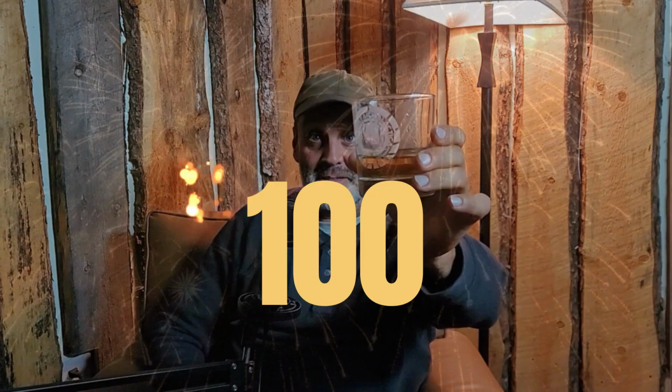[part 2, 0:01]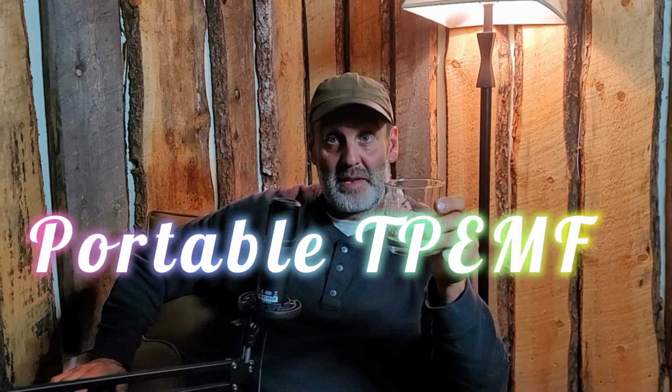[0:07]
Second milestone for today is that we are building a PEMF today. I'm going to show you how we did that. So you're going to be able to use it on your head. We're going to be able to follow up from last week's video, which is incredible. So you're going to be able to own one of those things for a fraction of the price that they would cost. You'll be able to do it at home, be able to help your friends and stuff like that.
And third milestone of today, I am one step closer to building the ultimate PEMF. And what is that, you may ask? Well, you're going to have to stay tuned to find out. But today, we're building a PEMF, just like we talked about last video, so we'll be able to apply that knowledge.
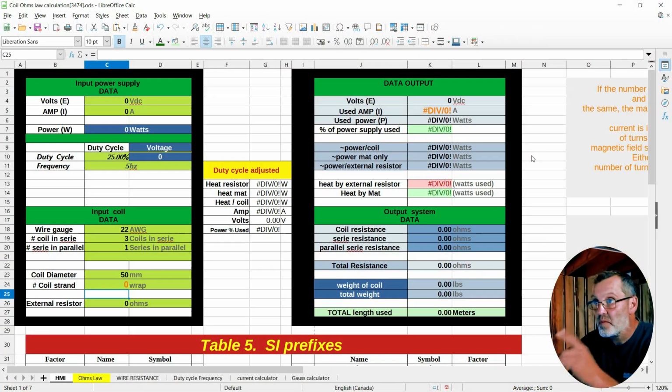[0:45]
We're going to start with the calculator. So the first thing we need to do is get through our calculator. We're going to be building something new, so we need to run some numbers. We're going to be using a 5-volt power pack. And they have a 1-amp output, and most of them have a 1-amp and a 2-amp output, but we'll start with that. Okay, we're going to be using 22-gauge wire. We're going to have three coils in the series, and then just one series.
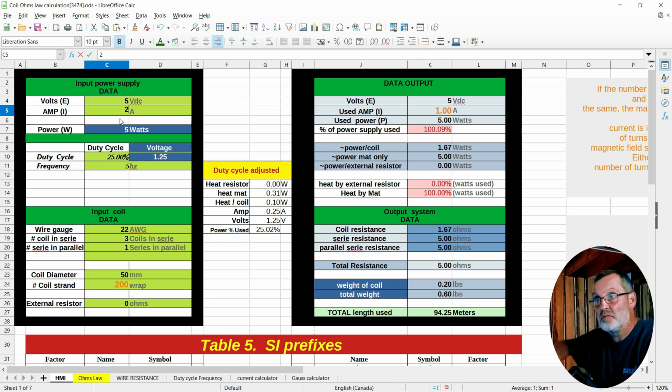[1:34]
They're 50 mil, which is perfect, because that's the coil diameter. That's what we're going to be using, 50 mil. And I believe I'd do 200 wraps. Yep, there you go. So it gives us 100%. Now with a battery, you don't have to worry about that, because that is fine. With a power supply, we would be burning it up. With a battery, it'll never give you more than what it can, and it's fine to give out 100% the way it is. If we had a 2-amp output, then that would be using 50% of what the battery can do. So, but for batteries, that's fine.
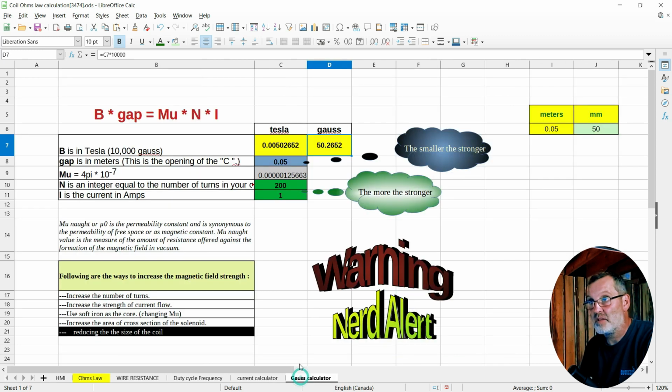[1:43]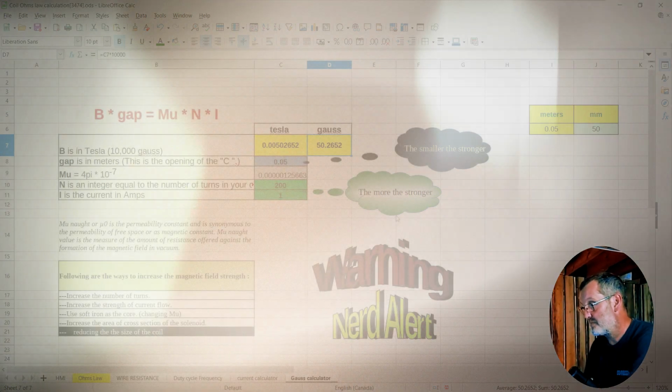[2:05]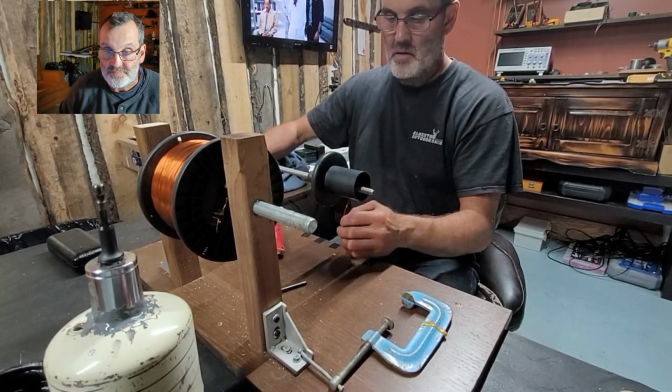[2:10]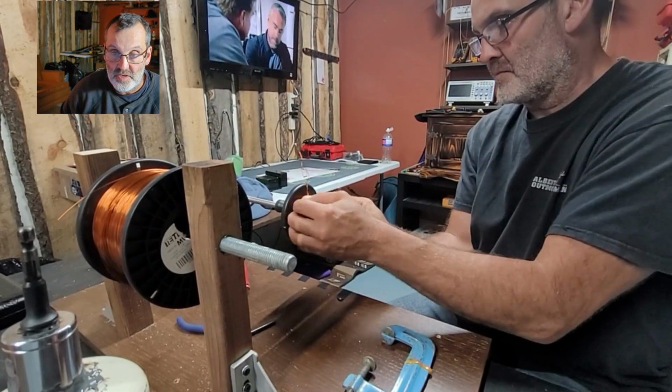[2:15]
Okay, let's make a coil. Same old 200 wraps for this one like we did in the calculator. I'm gonna get it out, tape the four corners, and then wrap it up.
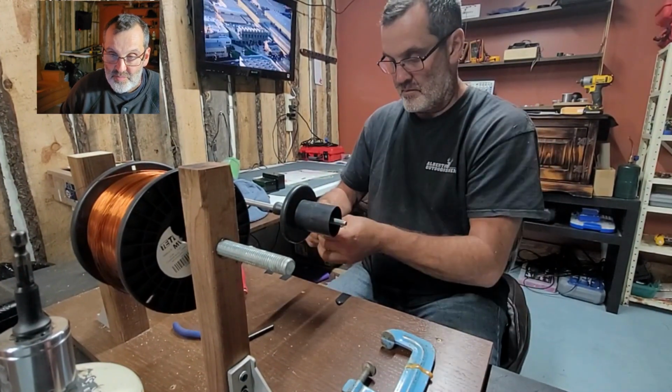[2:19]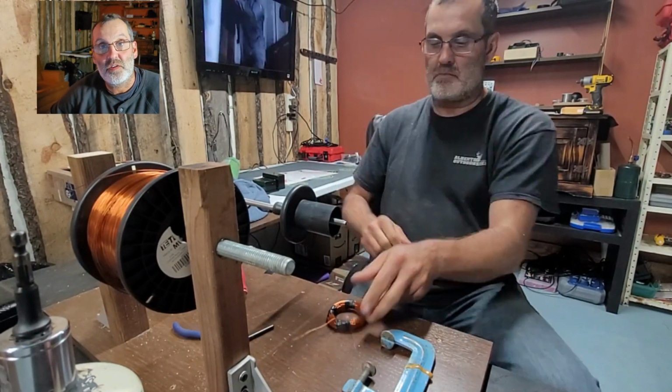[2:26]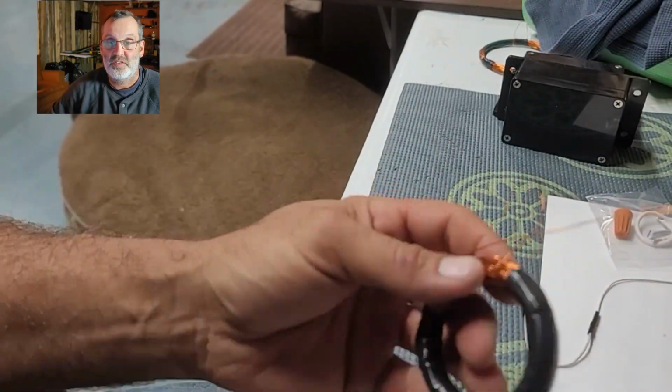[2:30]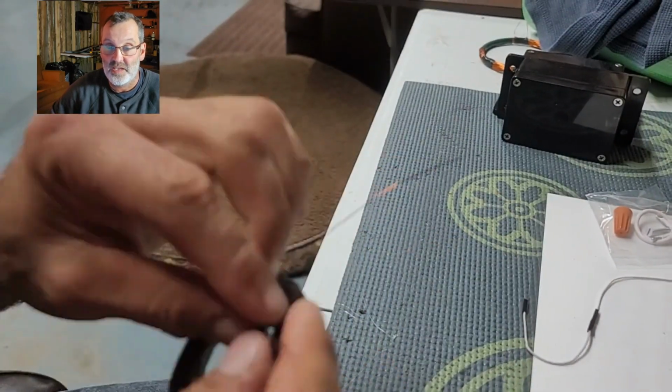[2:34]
I wanna take this time as you watch me doing this to take away from the theatrical of making YouTube videos and all that stuff. I didn't think we were going to get 100 subs. I didn't think I would get 100 people interested in watching this. So it's pretty amazing. I want to thank you guys for that.
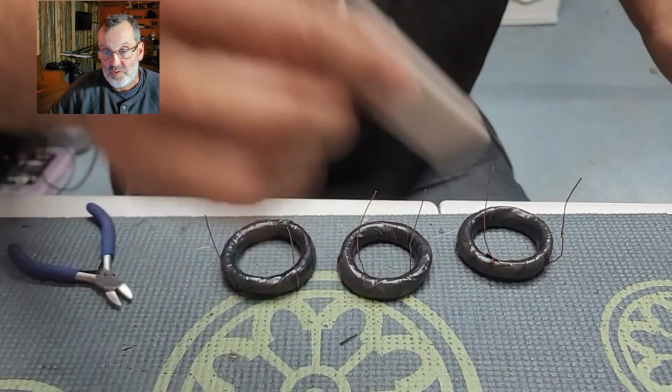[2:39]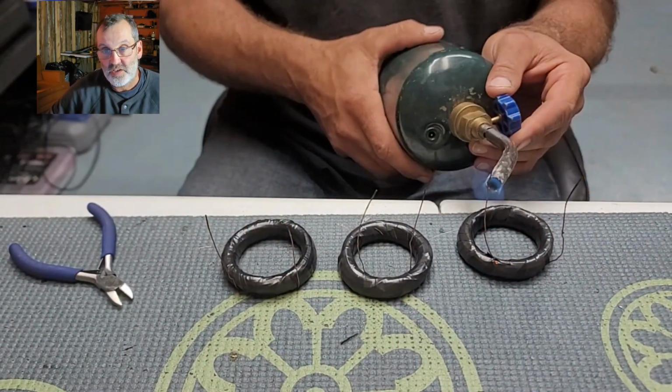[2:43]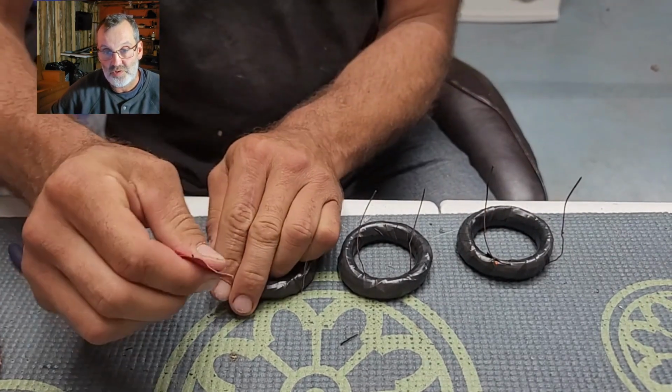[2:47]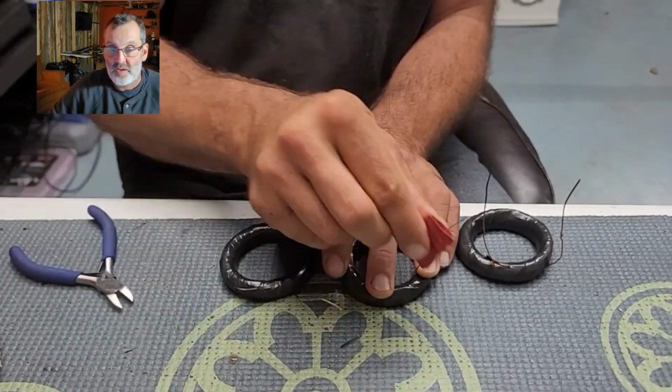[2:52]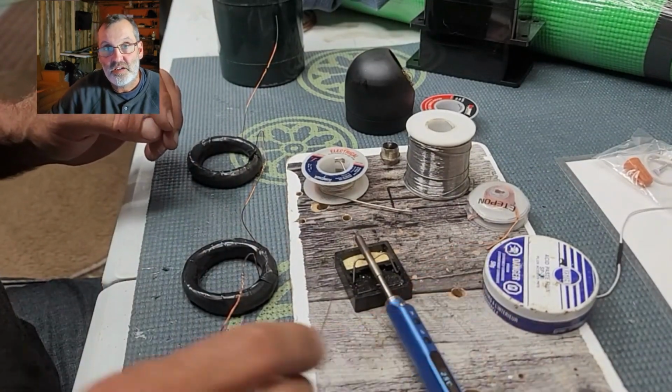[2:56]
Another thing I want to talk about today, before. See how I'm burning the end? You got to do that. You got to sand them down, burn them, clean them up. You got to expose the copper so you can make a clean connection. I want to briefly talk about why PEMF works. We're going to talk about that much later in the video series, but I'm going to touch on that today.
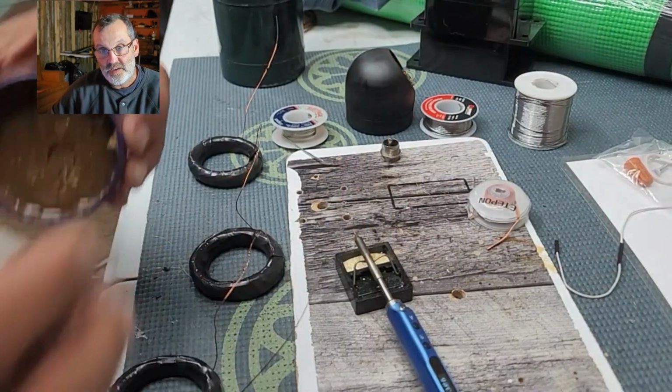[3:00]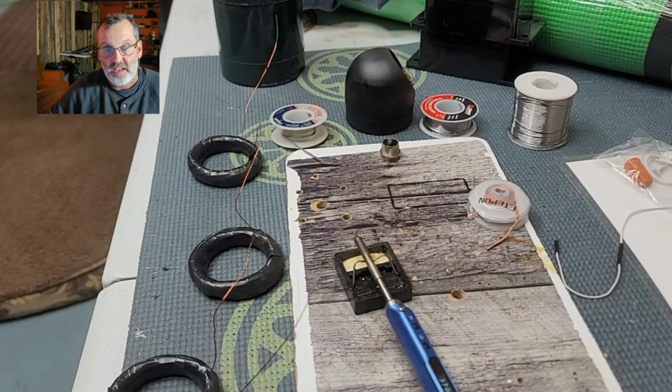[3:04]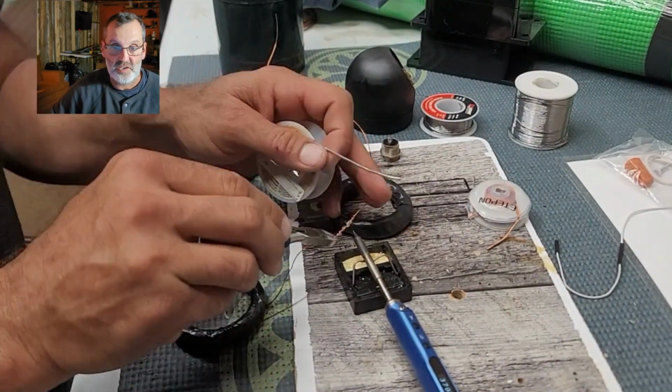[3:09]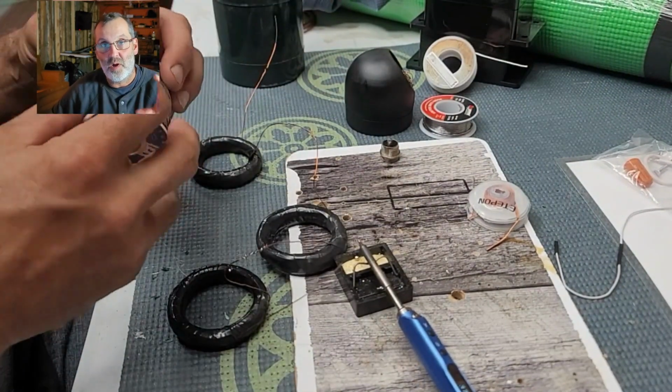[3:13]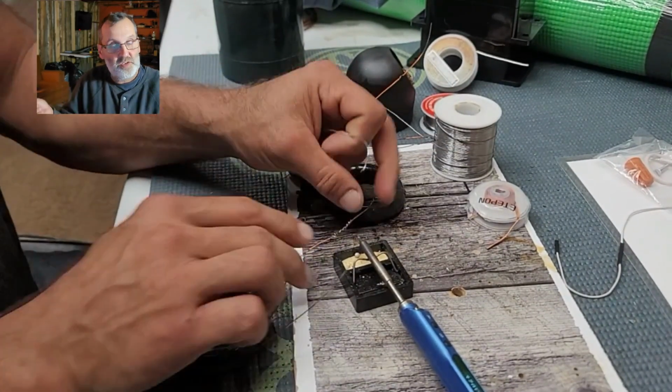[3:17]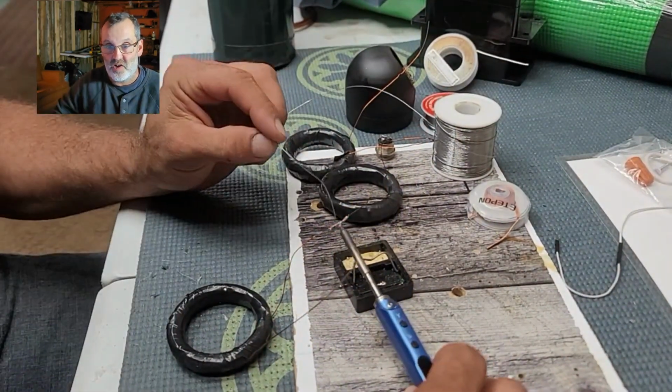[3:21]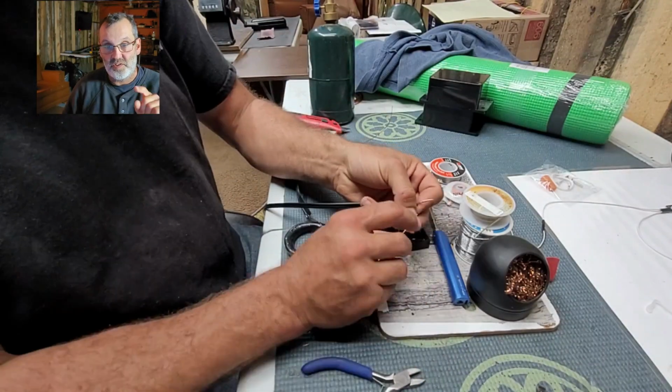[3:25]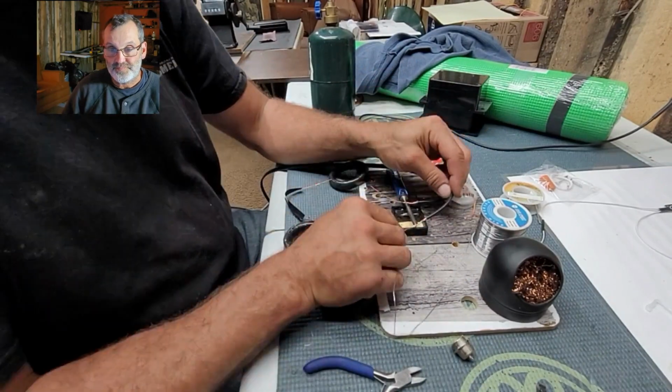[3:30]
You see the arrow right there? That wire in between the coils, that's a mistake. After it was all done, watching the video, I realized that I did that, so I took the whole thing apart, cut those wires off. You need a flexible wire between the coils. These magnet wires don't like to be folded, they break. They break all the time, it's just a matter of time and then they will break. So what you see right there is wrong. You need a flexible wire in between the coils, just the way I showed in the other video.
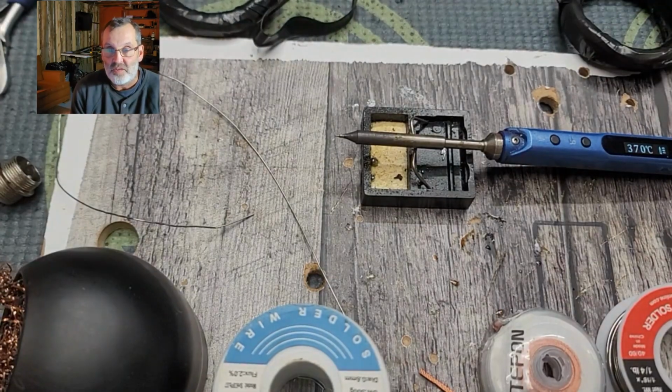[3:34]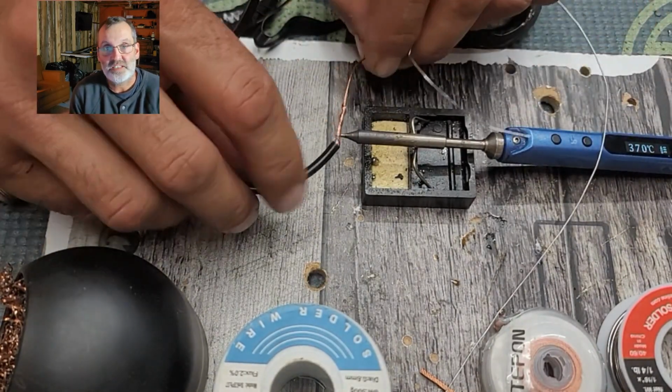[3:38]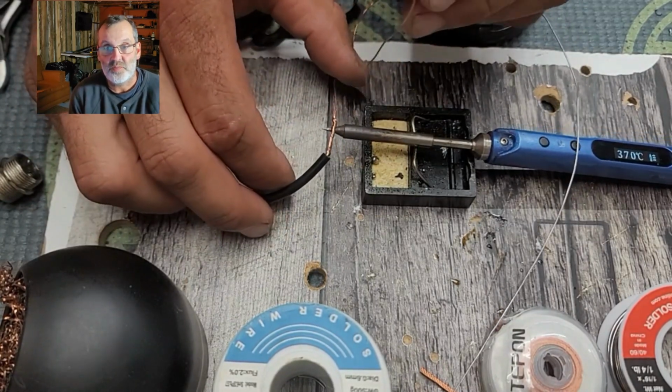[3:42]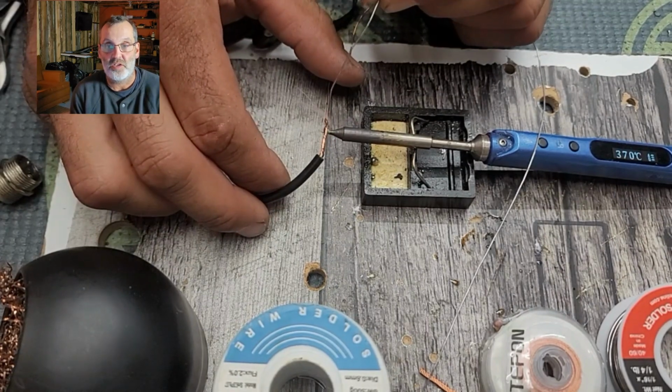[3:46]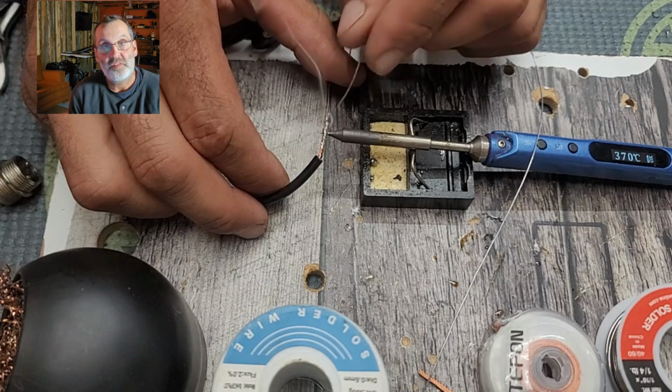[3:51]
So the pulsing EMF does not fix your body. That's not what fixes your body. What that does is it rebalances the immune system. The immune system is a really complicated system you have in your body. And that's what regulates the inflammation.
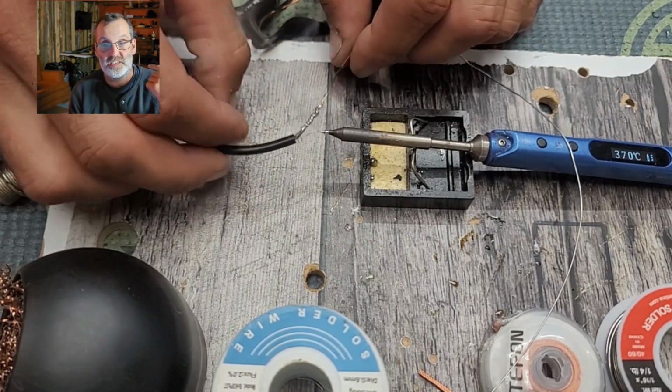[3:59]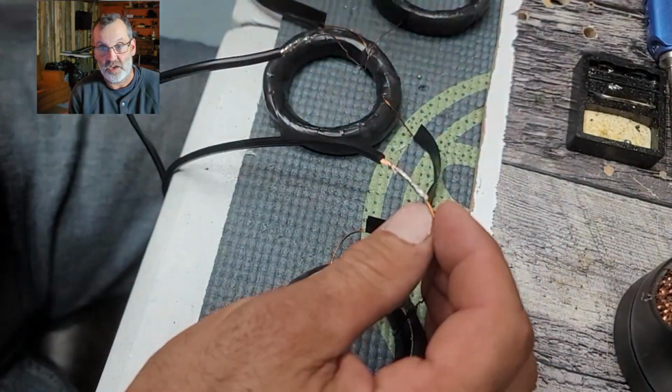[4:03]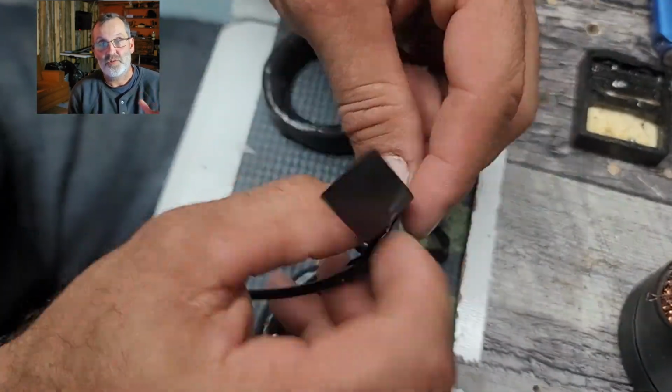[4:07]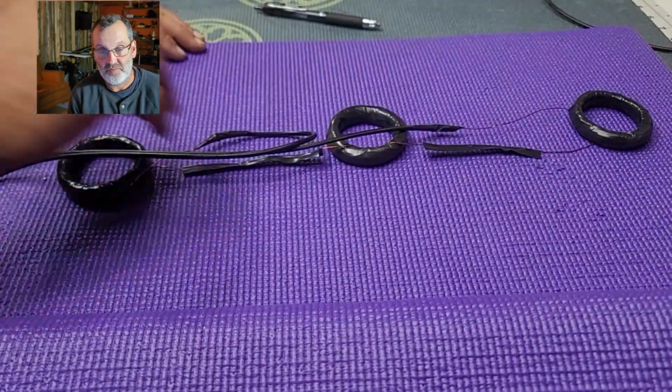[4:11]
Inflammation is 80 or 90% of the problem the human body has most of the time, from arthritis to autoimmune disease, name it, it's there. The immune system is in charge of all that stuff. So by rebalancing your immune system, you can get rid of chronic inflammation, which allows your body to heal itself.
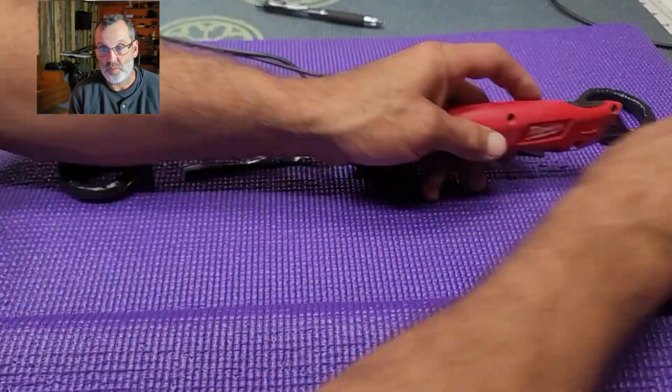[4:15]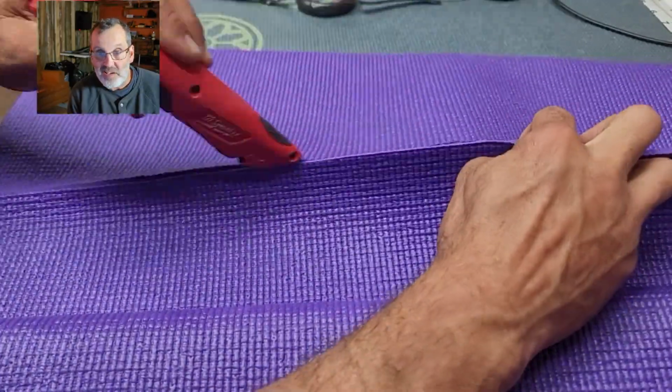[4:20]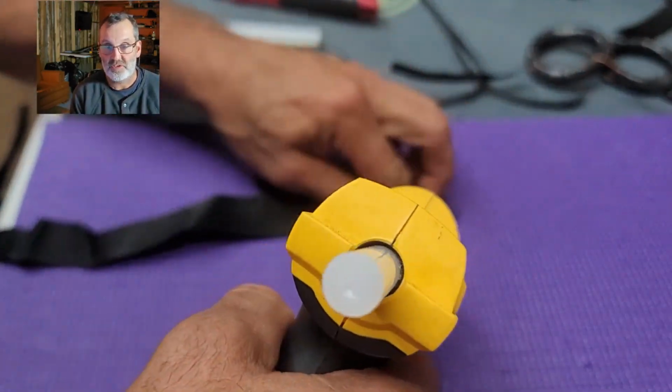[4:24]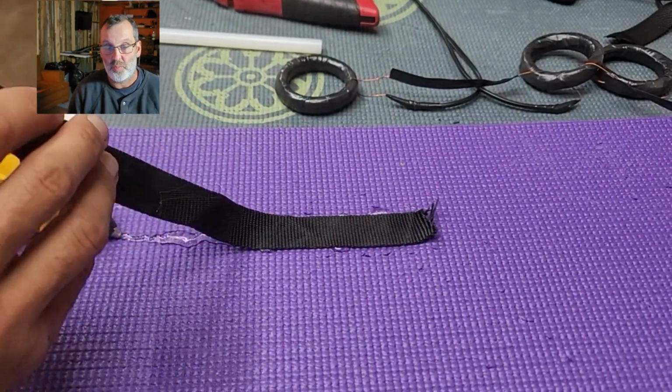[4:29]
Okay, here I'm just using a yoga mat, and I decided the width that I needed. And yes, I'm left-handed, and I just go ahead and cut it off, and then I use my glue gun and put the straps on. I have some straps and some clips, and I secure them in place so I can strap this portable PEMF around my waist, my shoulder, etc.
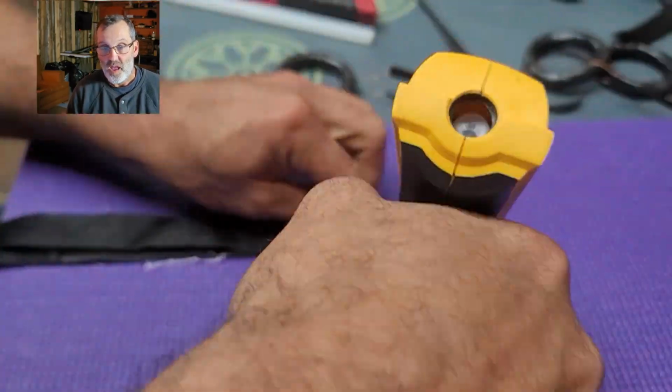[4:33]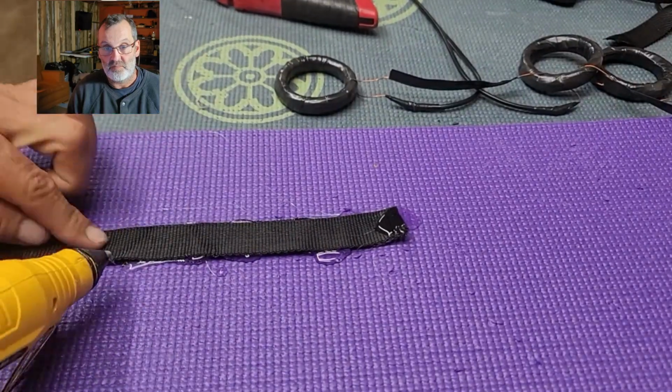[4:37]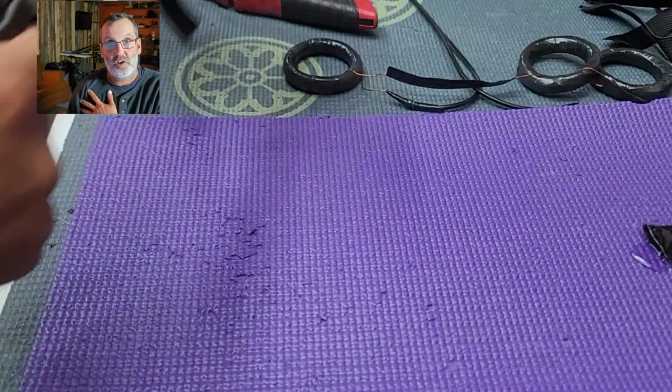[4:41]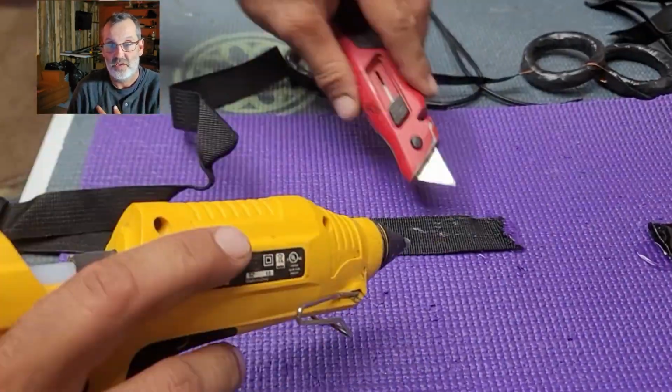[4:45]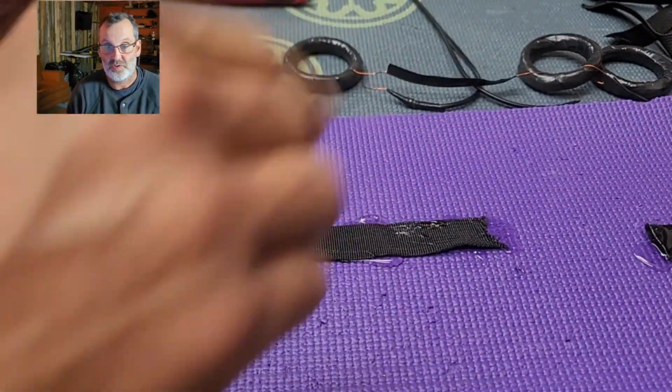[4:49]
I came back from the doctor today. A year ago I was supposed to have surgery on my shoulder because I had a rotator cuff injury and the tendons were disconnected, basically. About 90% of it was coming apart, so the doctor wanted to do surgery. So I did everything right.
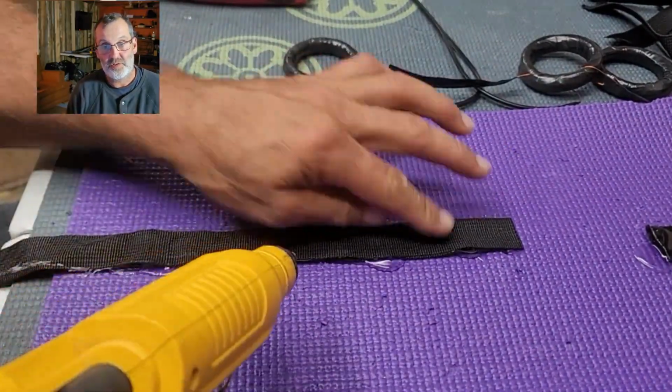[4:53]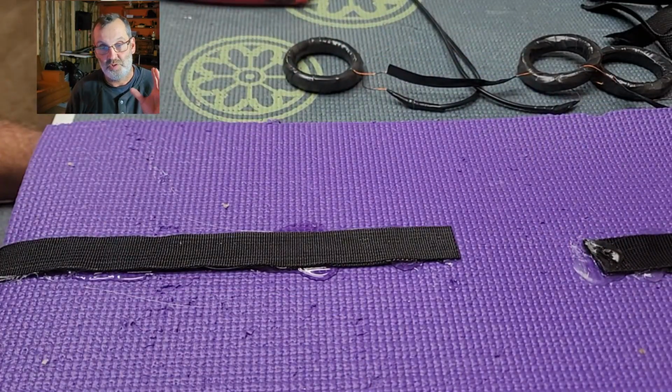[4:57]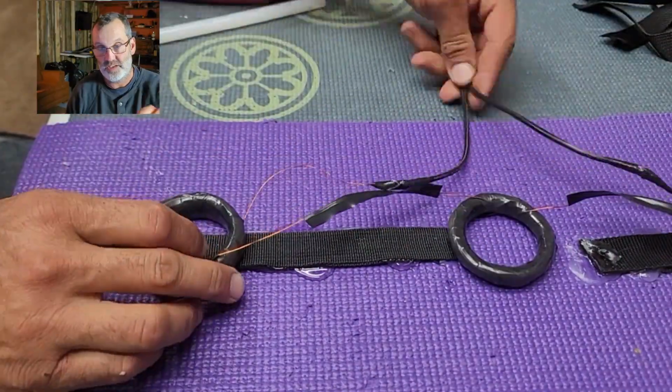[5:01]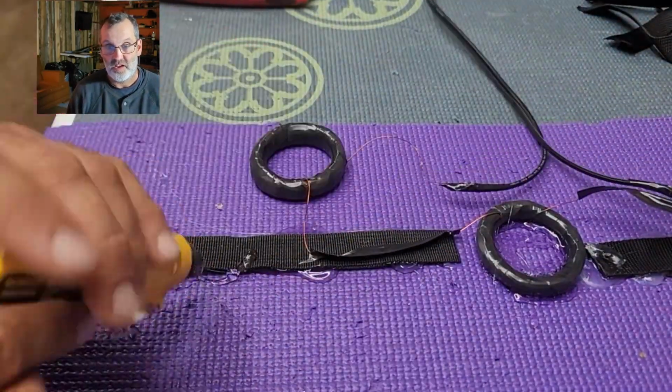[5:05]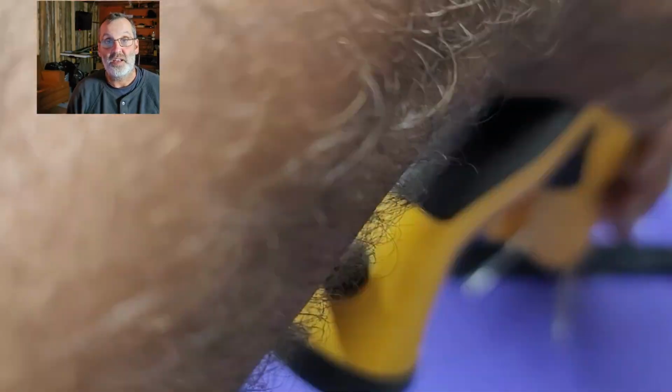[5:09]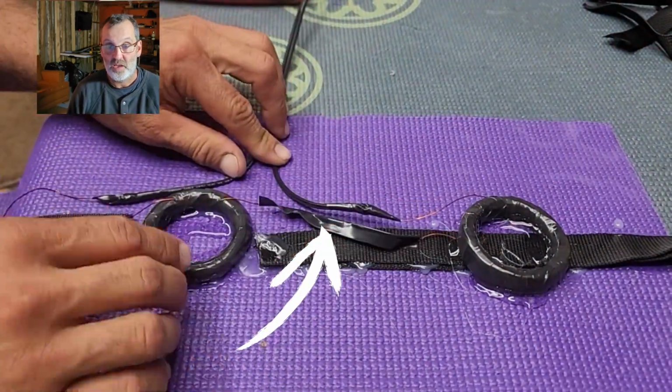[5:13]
I didn't do the surgery. I did the physiotherapy. I did exercise, I protected it, and I used my portable PEMF, the exact same as what you're seeing right here, on my shoulder once or twice a day, pretty consistently. And I just got my result today, and I'm good. I don't need surgery, everything's fine, I've got no pain anymore, everything's good.
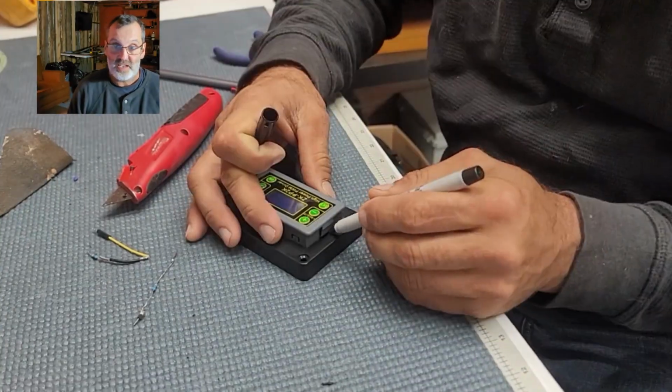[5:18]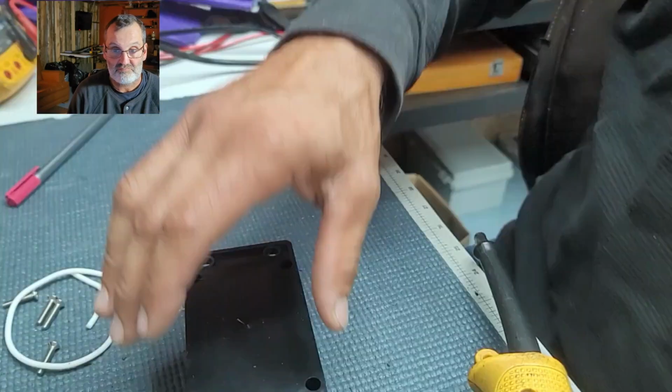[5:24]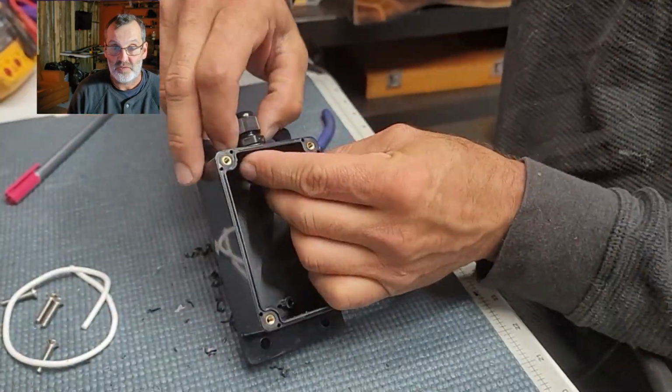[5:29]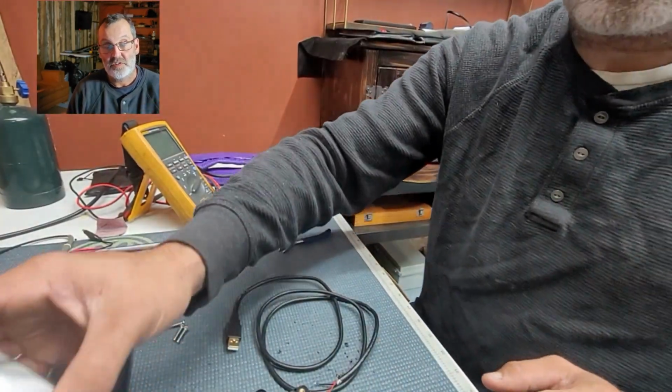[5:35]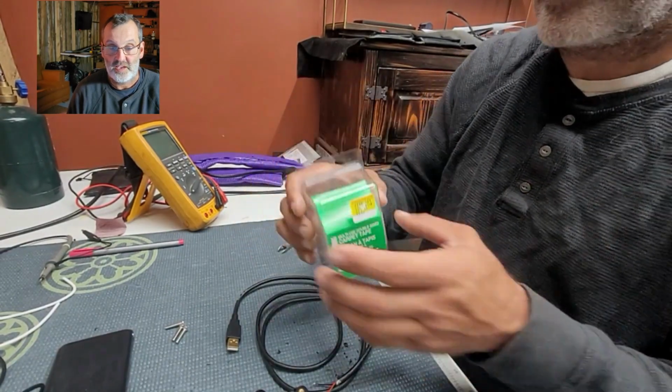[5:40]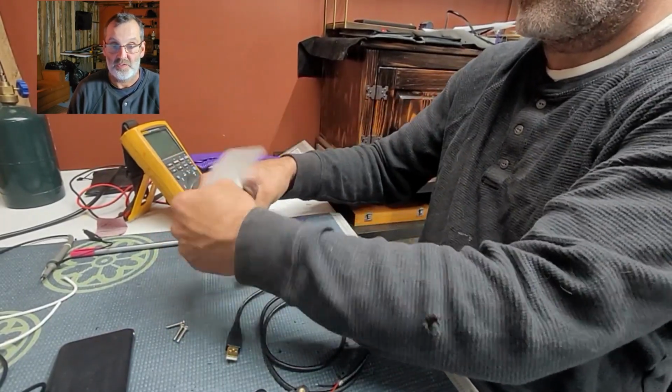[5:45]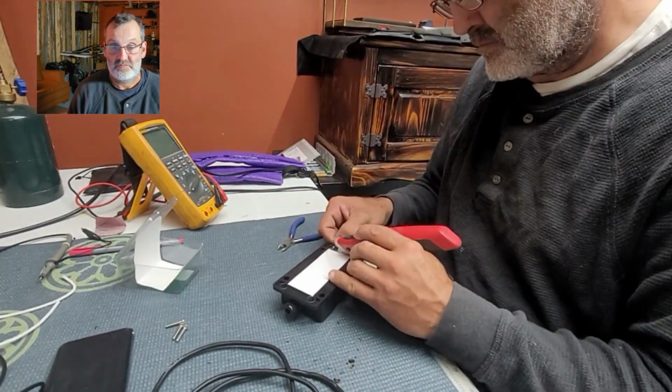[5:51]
So I glue this thing down, and now here I'm just literally got my little box, and I'm just tweaking it so it fits good. Now I'm just cutting the two holes for the strain relief, one for the power coming in from the battery, and the other one for the connection to go to the coils. I like to use two-sided sticky tape, and I glue the battery onto the back of the box. Nothing special. You'll see me putting like three wraps, it's just everywhere, cutting it good.
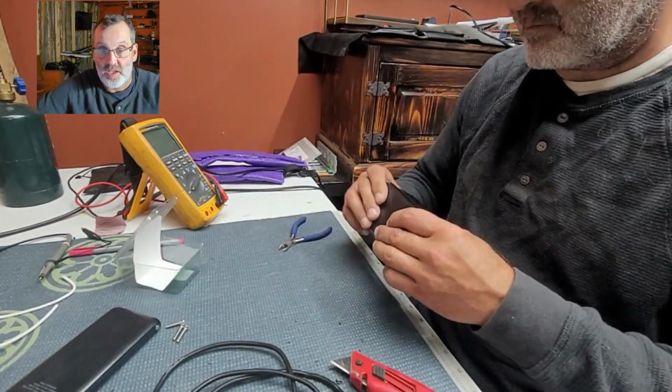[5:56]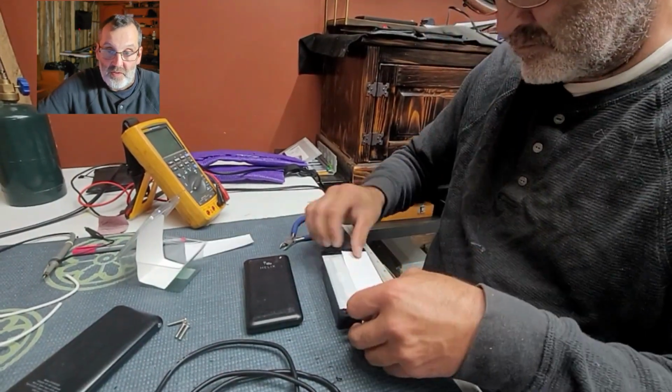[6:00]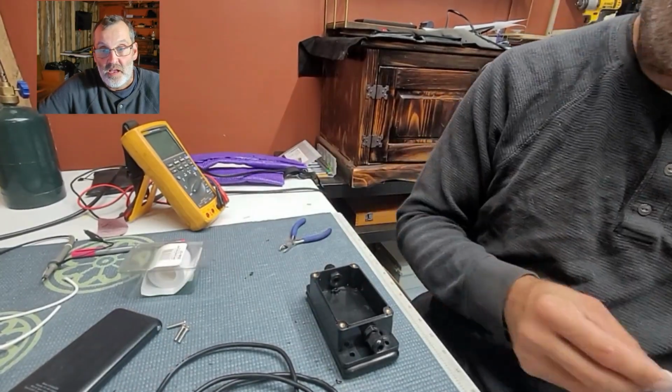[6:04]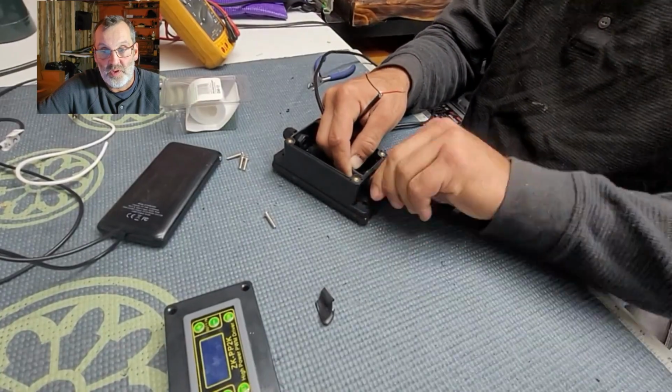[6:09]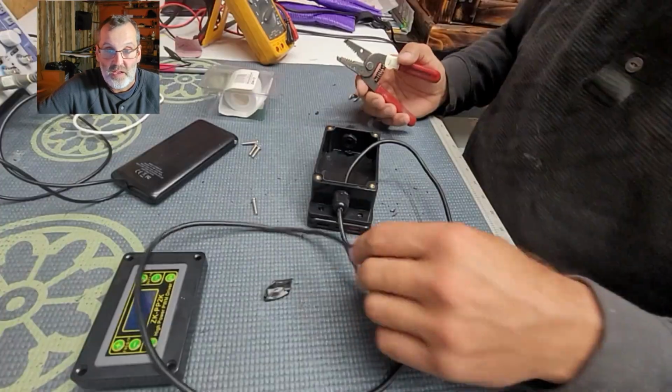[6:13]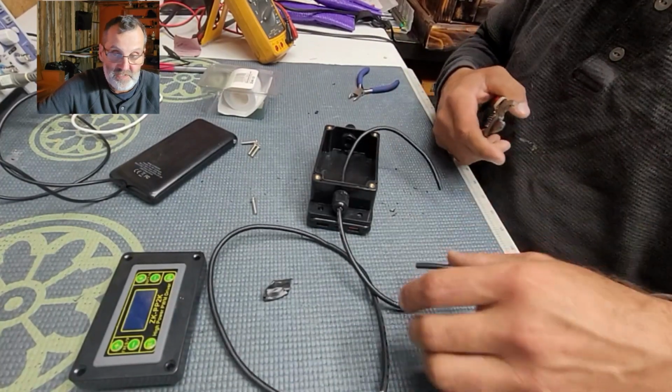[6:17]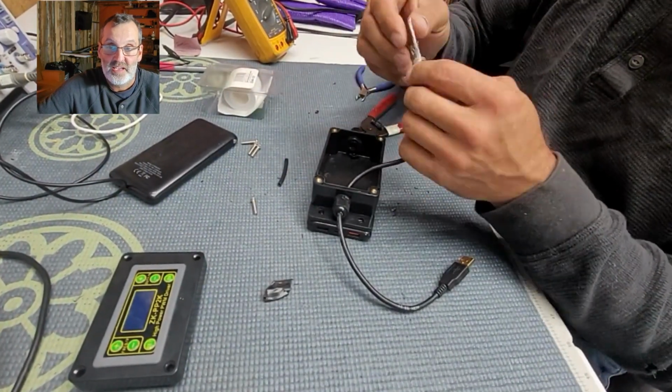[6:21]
Nothing too complicated. So, the PEMF wave, square wave is king, remember that? Rebalance your immune system. That's going to be the biggest gain that most people are going to get. People ask me, can I get fixed with PEMF? And the thing is, everybody's different, so it's something that we'll talk about in more detail later, but just know that there's a good chance it might work, right?
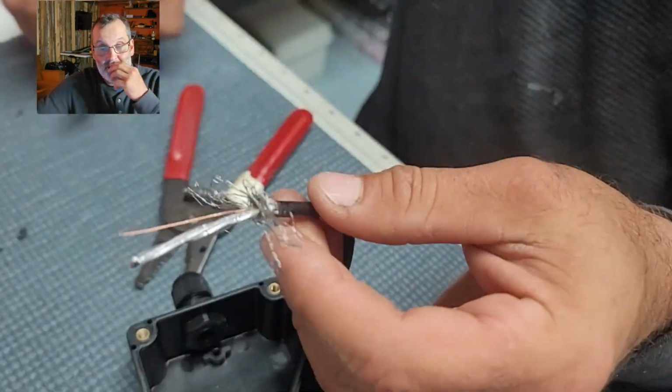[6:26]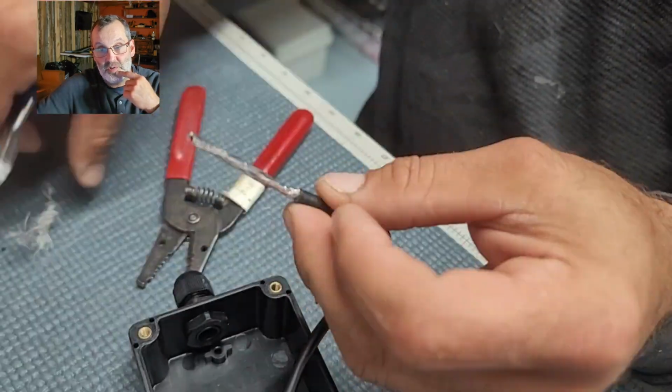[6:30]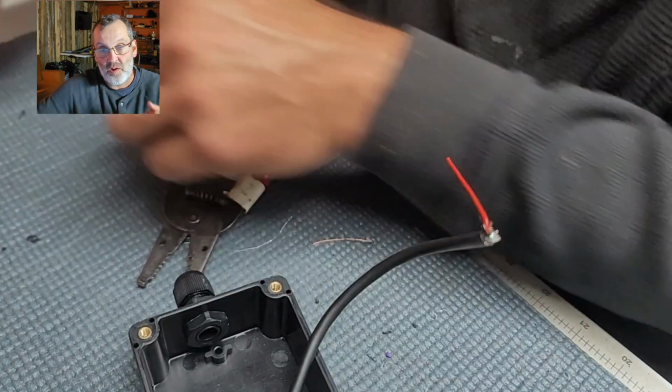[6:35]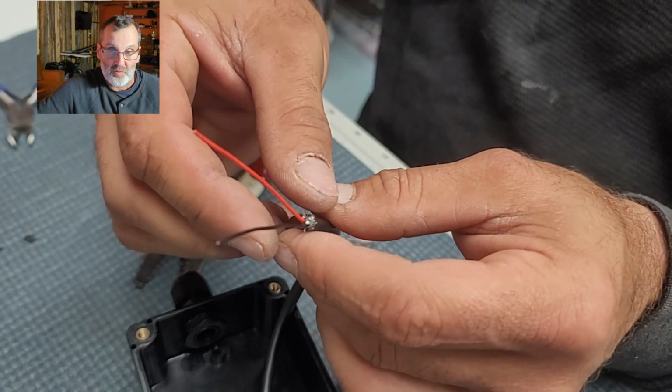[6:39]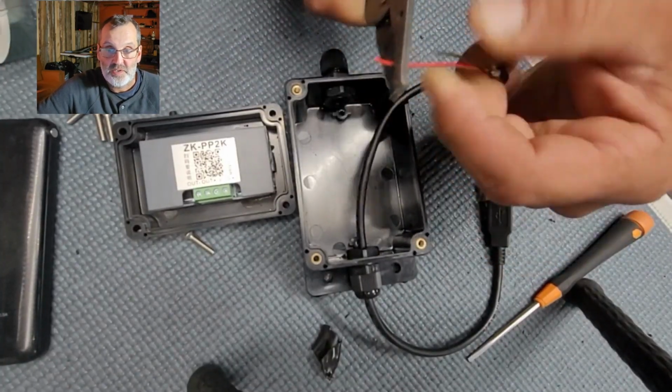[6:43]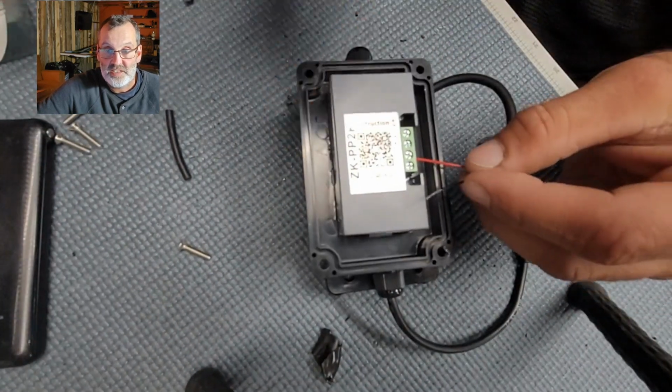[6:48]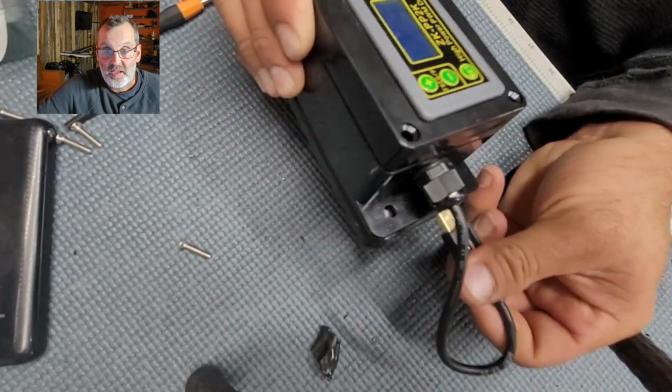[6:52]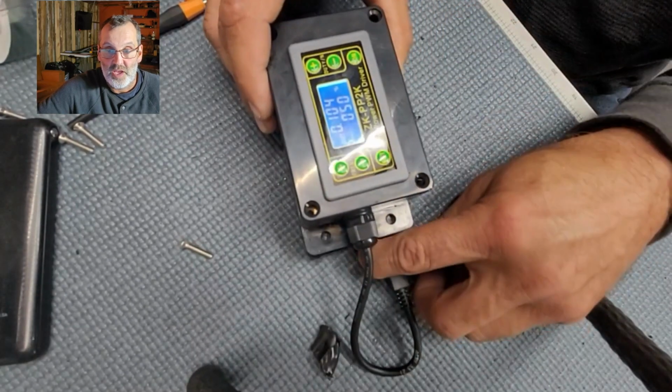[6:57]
This is a USB cord that I use, and that USB cord needs to be stripped down. I know that the red and black on this one is the power. They're a slightly bigger gauge too, so you can feel it. I have my meter and I checked them out first. But I knew this one was black and white for the power. And now you're gonna see me stripping it and then putting it into the power input plus and minus of the ZK-PP2K. And then I plug it into my battery, turn it on, play, and I just check that it's working. And pretty happy it's working.
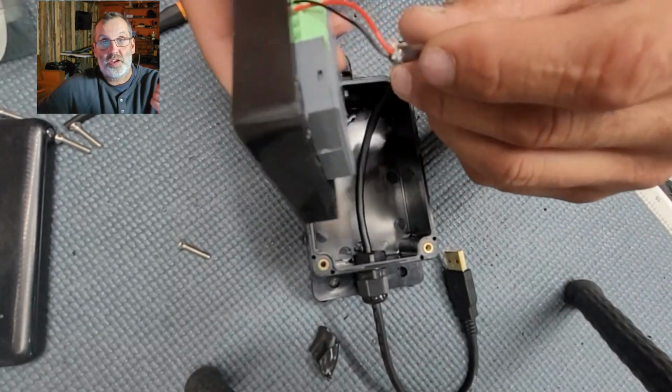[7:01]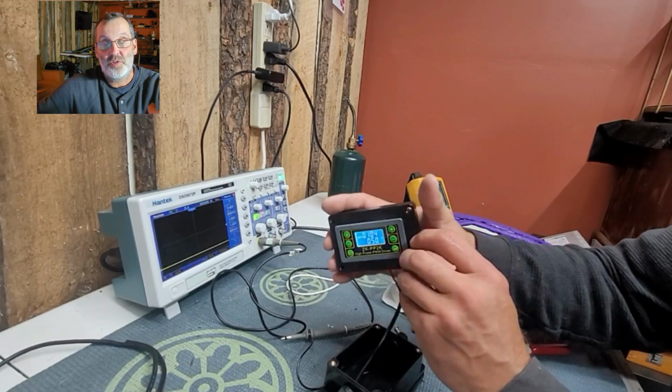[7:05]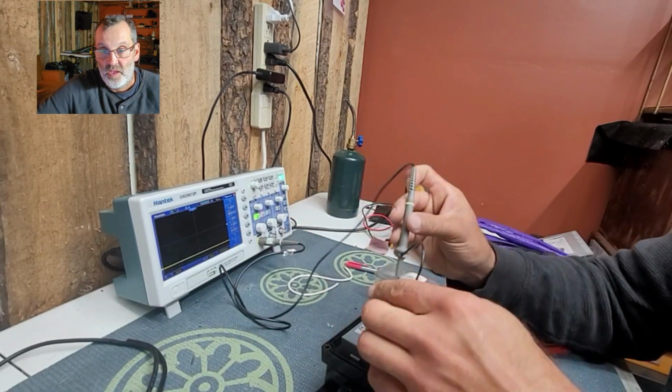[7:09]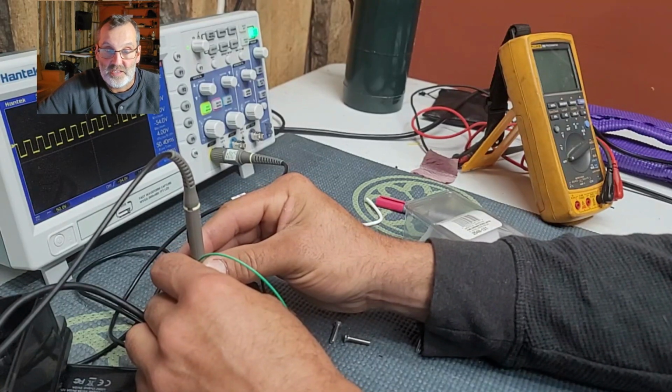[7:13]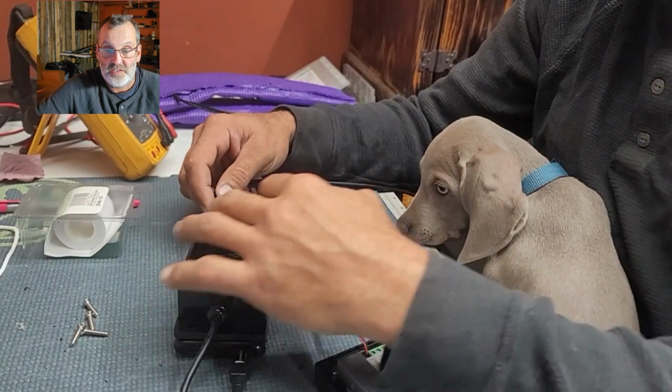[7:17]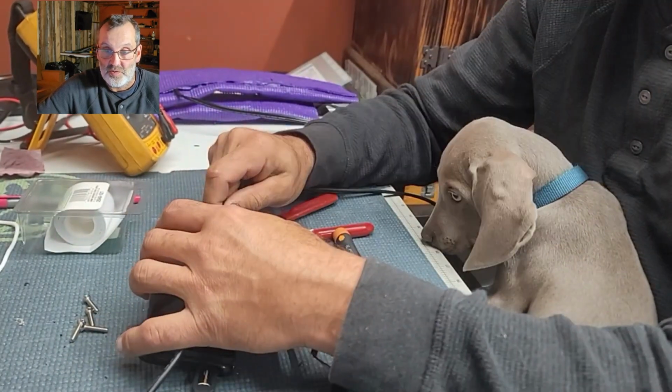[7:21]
By the way, you can plug that into a cigarette lighter plug-in that you've got in your truck for charging your phone. You can plug that into a computer. So it's really versatile that way. You can plug it in any USB. Now I'm going to check the, look at that beautiful square wave that it creates, right? This is why I like this unit. It's solid. Oh, here's my puppy. Yeah, she woke up and she joined me.
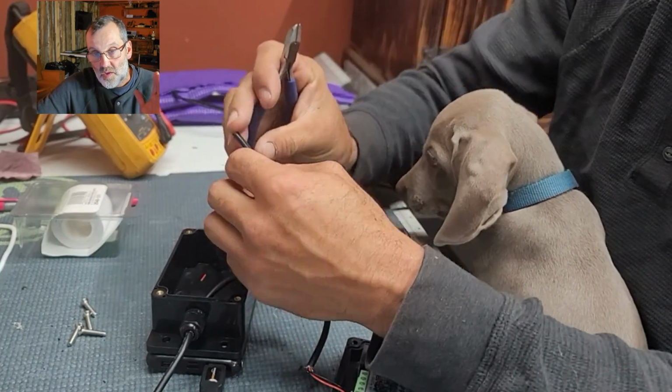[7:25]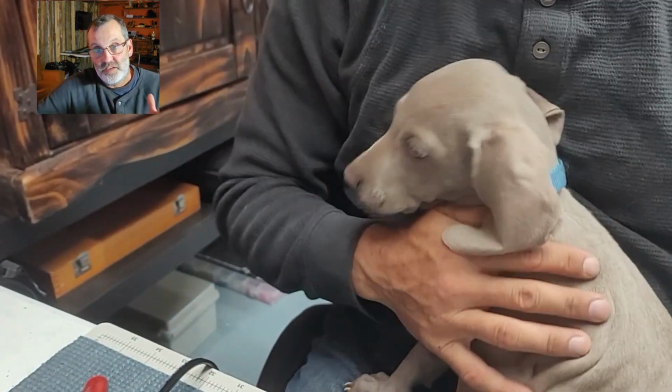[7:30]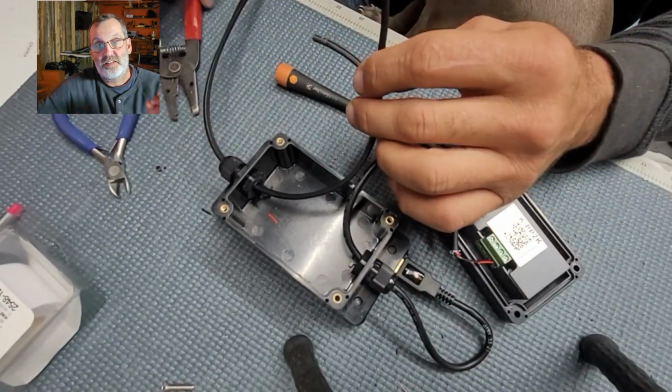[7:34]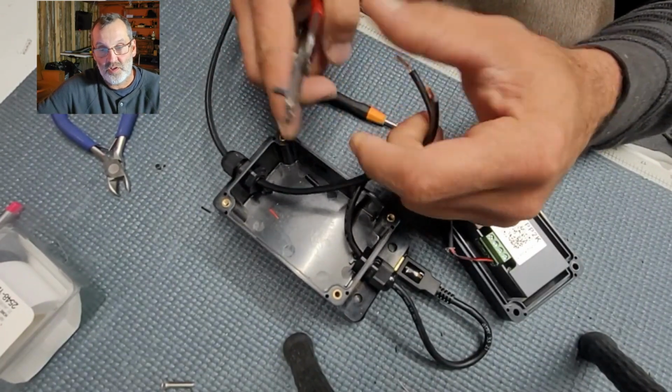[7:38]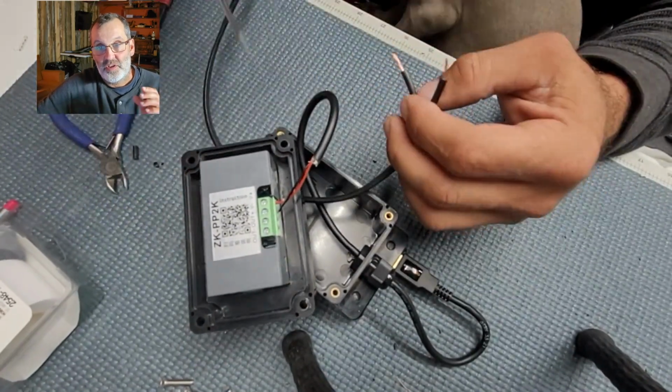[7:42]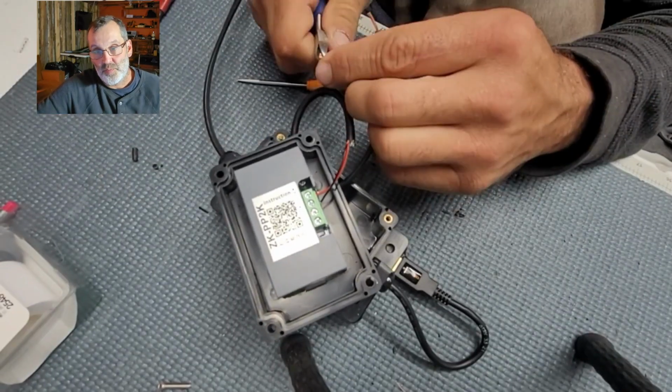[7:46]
She's awesome. So, PEMF rebalances your immune system. So to answer the question, can PEMF heal me? Well, if you didn't have this whatever condition you're having right now when you were younger, that's a positive. If the body can heal itself, then PEMF can help you. That's basically the short answer of it.
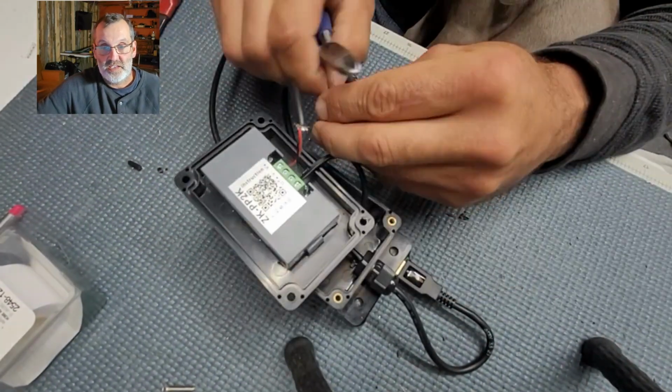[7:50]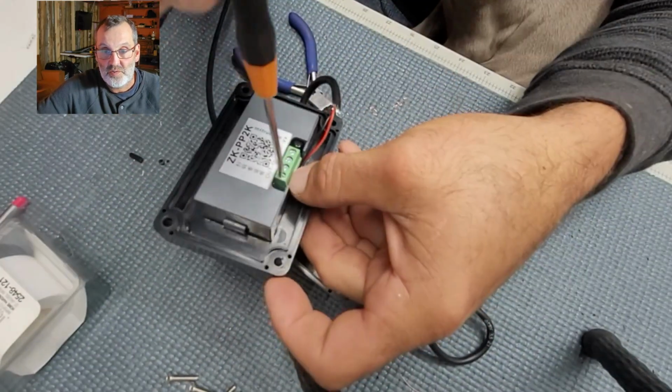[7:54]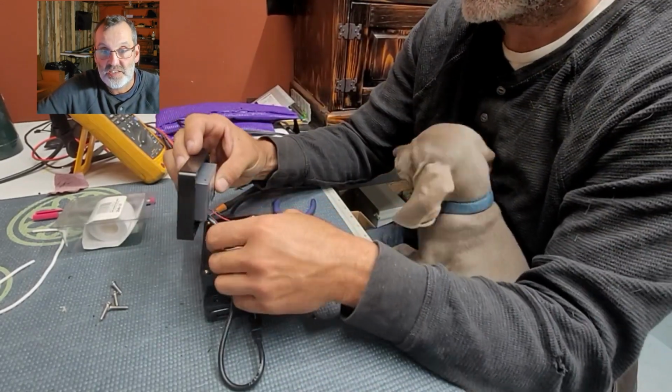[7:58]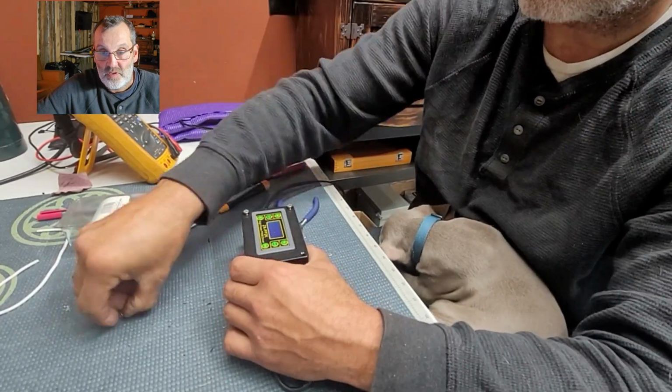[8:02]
So now I'm just connecting the coils. This is my wire that goes to the portable PEMF mat, basically, and I just connected it in that. You can see in the back. And now I'm closing everything up. Nothing too mysterious there either.
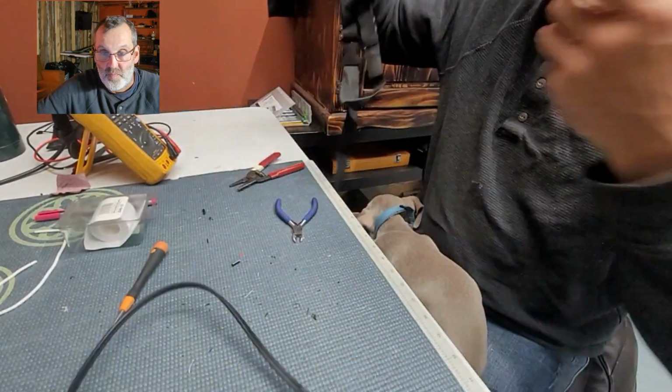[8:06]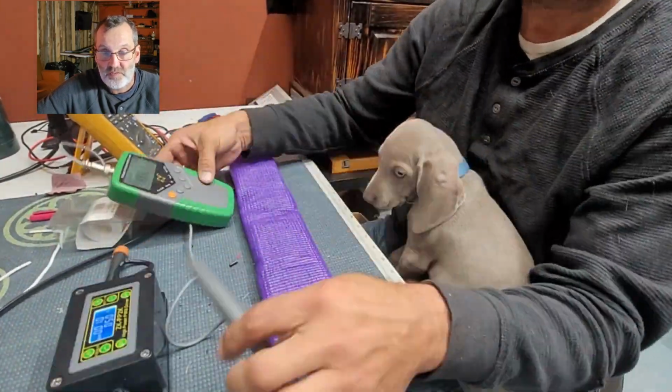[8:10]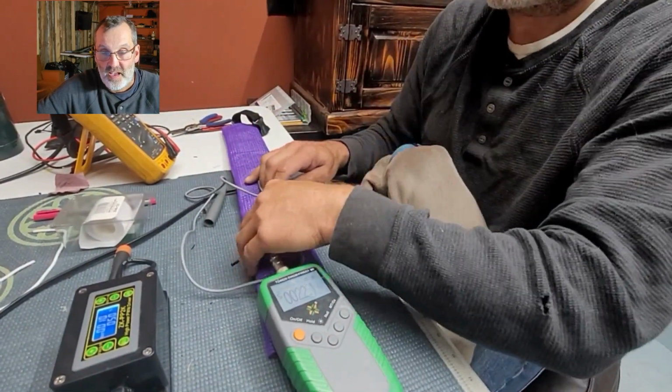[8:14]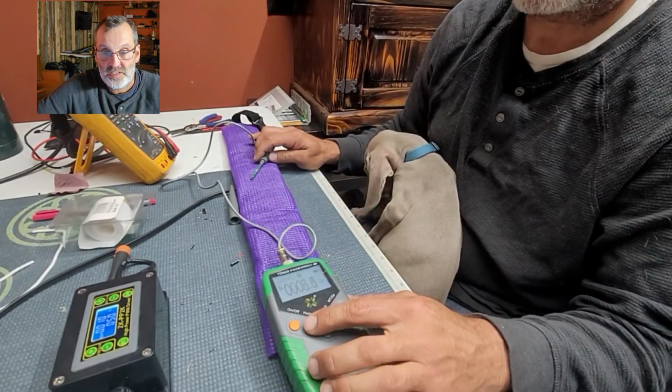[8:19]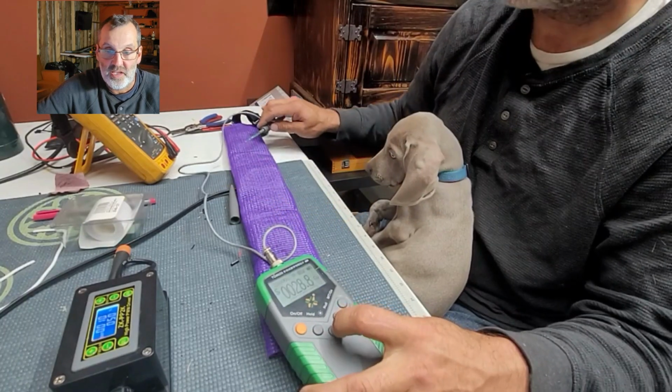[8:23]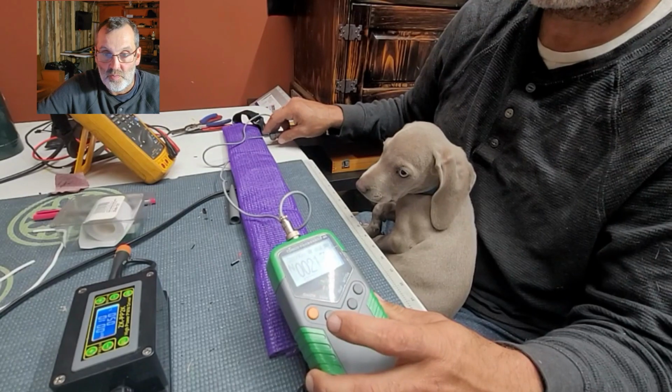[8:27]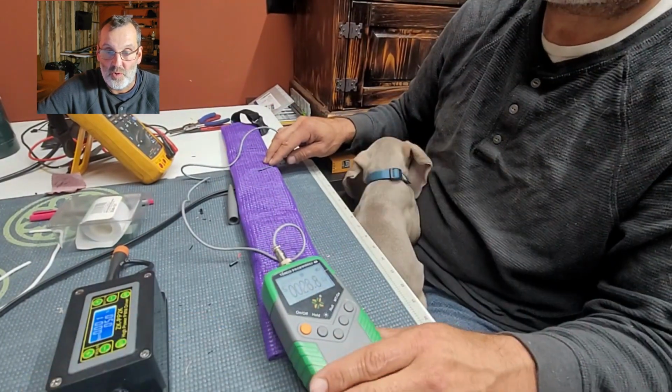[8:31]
And now, remember we said the formula was saying 50 gauss. We didn't reach 50 gauss. I didn't think we would. Like 22 gauss on this test. And another test, I think I'm getting 28 gauss. Yeah, 28.8 if you look at the screen. I think at one point I got 29 too. But basically it's safe to say that they're about 25 gauss per coil, right?
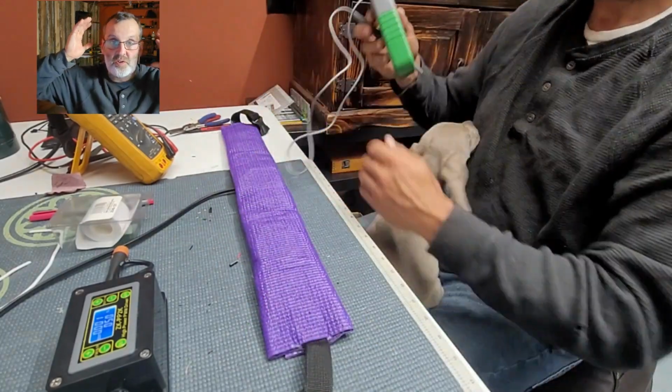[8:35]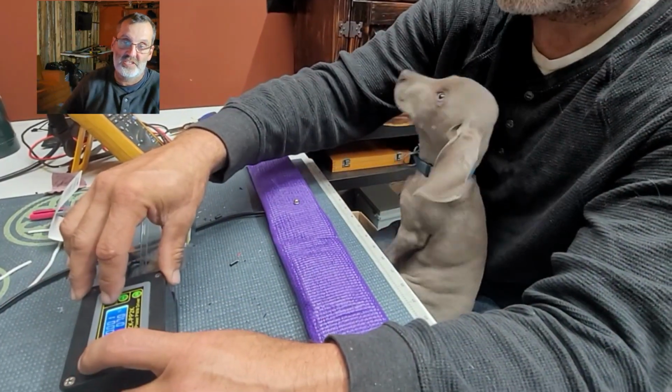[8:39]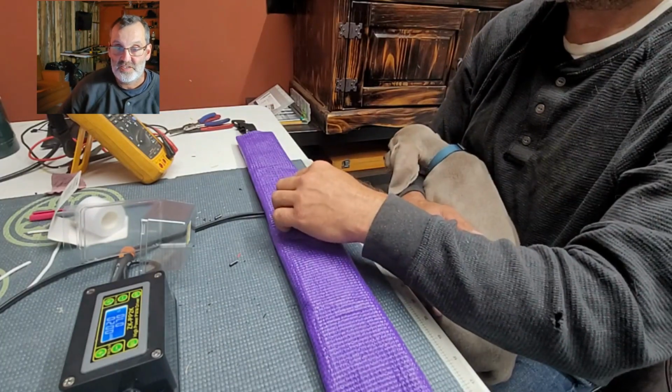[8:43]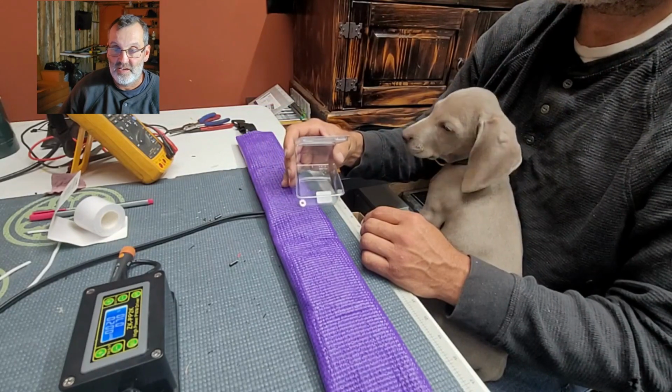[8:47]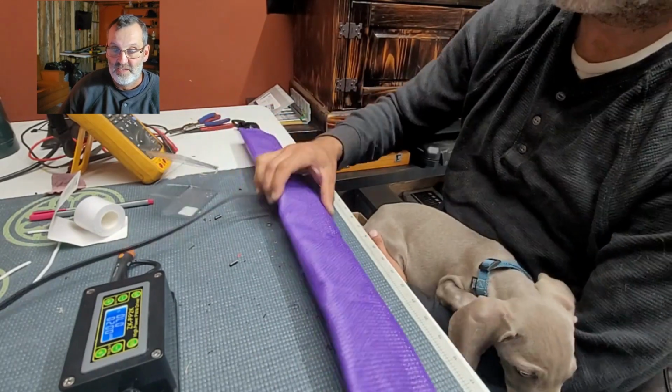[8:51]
Which for the head TPEMF, according to all the research, they're using 20 gauss. So it's perfectly balanced. Now you see me playing with my magnet. I always enjoy that. Let's put my magnet there and it just kind of plays around. I was hoping it would entertain the dog and make her look around, but she didn't care much about the noise that it was making.
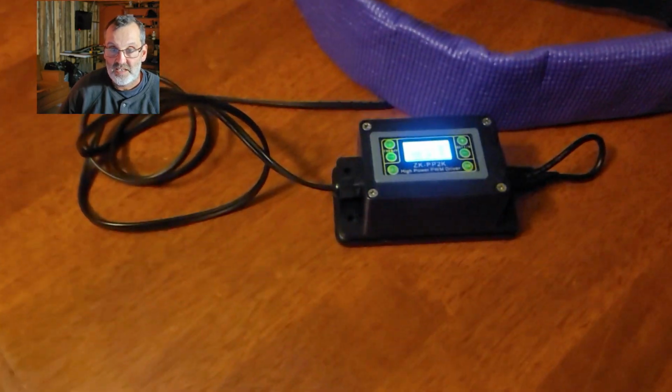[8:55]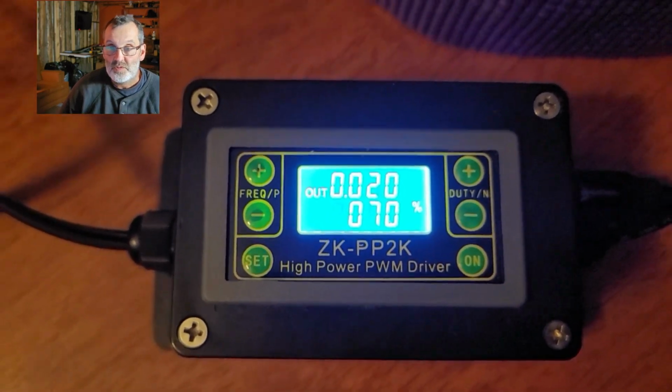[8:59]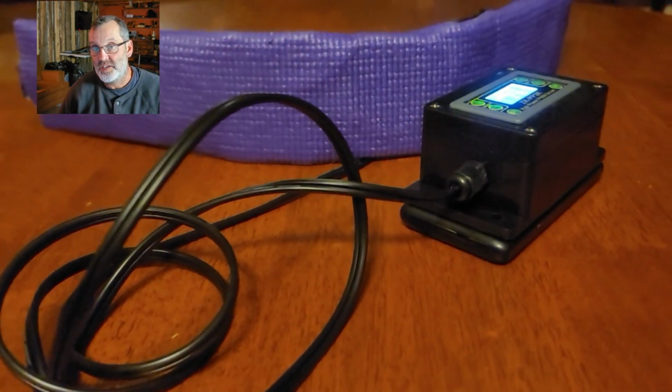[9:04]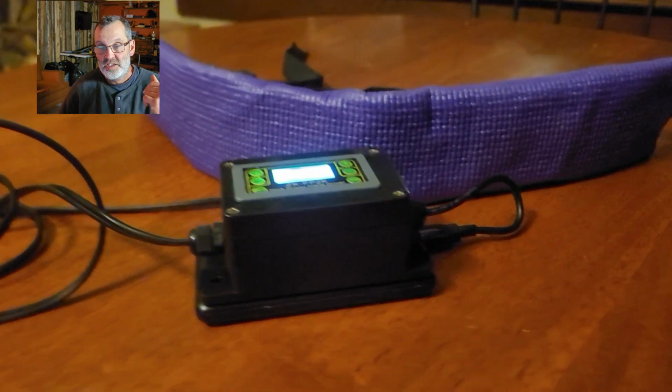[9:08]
And here's the final product. It's nice and clean. It's beautiful. It works well. Nothing too special about it per se, but you can build one of those for pretty cheap. And if you don't feel you have the know-how, just let me know.
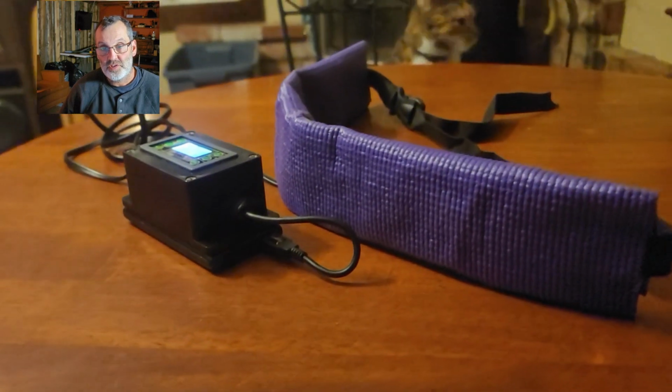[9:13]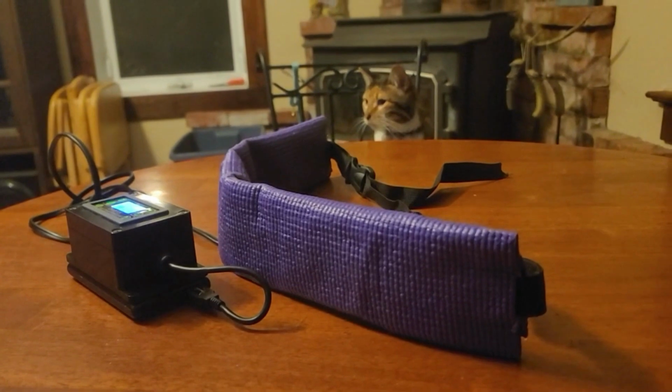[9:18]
That's my cat Tallulah. So we just finished building a TPEMF. If you have a headache, you can put it on your head. It helps lots. Depending where your migraine is, you just need to move the TPEMF where you need it. For anxiety and depression and everything, like we talked about in the last video, put them on your frontal lobe right here and right there. And then you can also bump it up to 1000 Hz for 45 minutes and just go for it. According to the research, it looks like it's something that has a huge potential.
This portable unit, the beauty about it is that by using the USB cord, you can plug it into any USB device. The battery is good if you don't have any power with you. But if you're in the car, for example, and like me using it on my shoulder, I just plug it into the adapter, cigarette lighter, phone charger. Or if your vehicle comes pre-equipped with it, just plug it in there. And as you drive, you can do it that way. You can put it on your neck. I had neck injuries and it was perfect. I use it on my neck, on my shoulder. My wife uses it on her knee.
So in Canada, they put a PEMF on your bones, on your skin basically, if after 6 weeks your fusion hasn't happened properly. That technology is not covered by the medical health system, by the way. So I spent 18 hours a day with that PEMF around my waist, on my ribs, basically in my lower back. And in the middle of week three, I was back riding horses. So, it works. I was talking to my dad about it, who is retired from the medical field, and he told me the floating ribs are extremely painful when they break. I've broken many ribs before, but just never my floating ribs. And I had no pain. Well, I did have pain, but compared to what broken ribs are, I had no pain.
So, long story short, this is a really good unit. My wife had a swollen knee because of a horse injury. The doctor was going to drain her knee, and she put that portable PEMF on her knee, and the swelling went away. All the water and everything went back to normal in 2 days. So, once again, does it work? Yes. Does it work for everybody? No, nothing does. If your body can heal itself, PEMF can help you. If it's a condition you did not have when you were younger, PEMF can potentially help you too. So it's a really good system to assist.
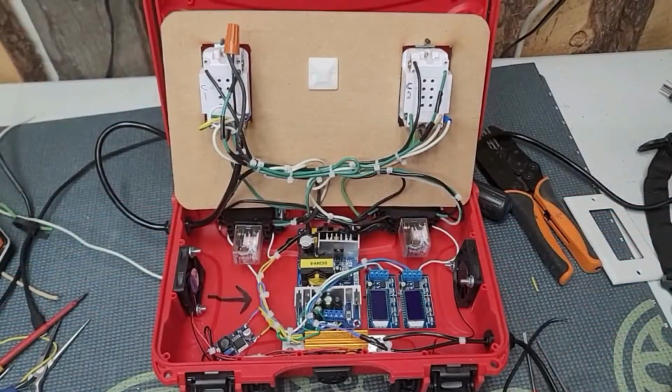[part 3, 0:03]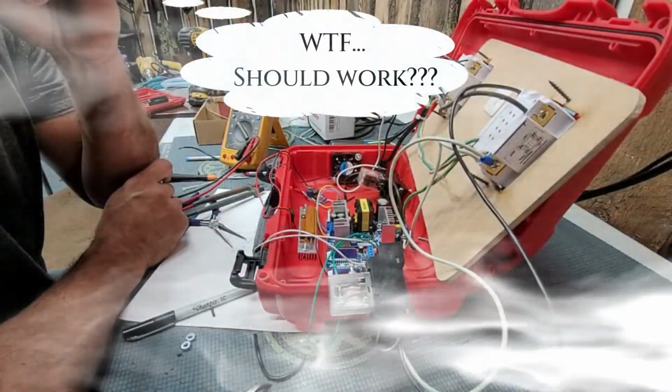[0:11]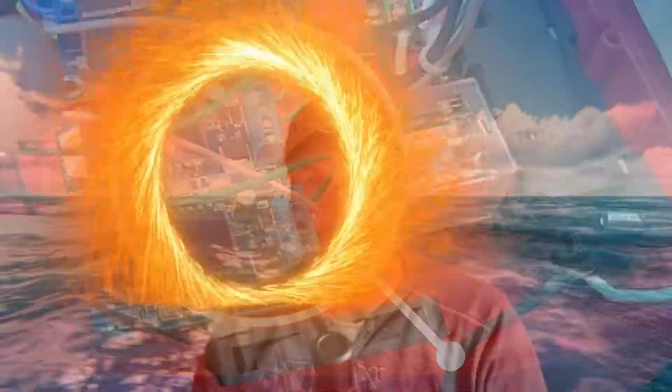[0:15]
Today, you're going to see me building my first rTMS machine. You're going to see the design with raw footage, including me thinking really hard, trying to find solutions to my problem, and the stupid mistakes I made. And finally, you'll see me succeed. Throughout this whole thing, we're going to be discussing PEMF and why it works.
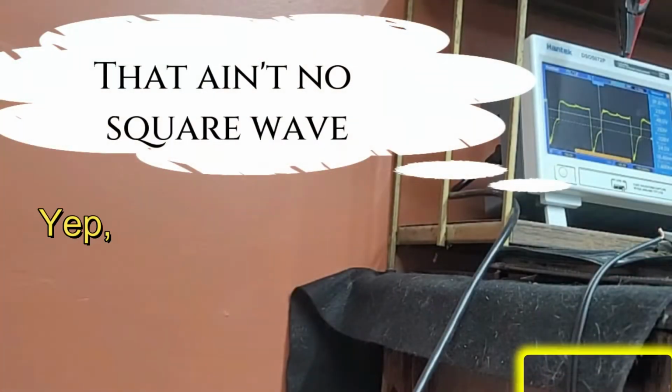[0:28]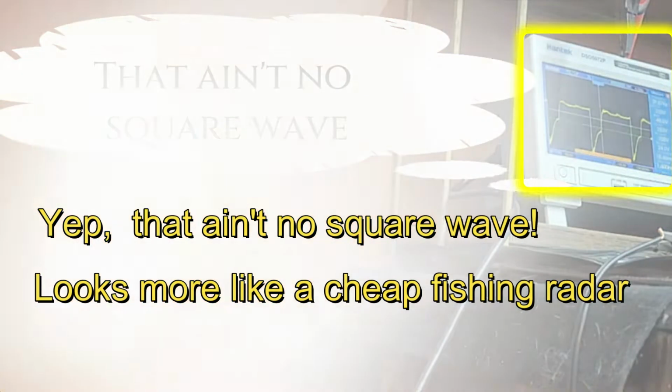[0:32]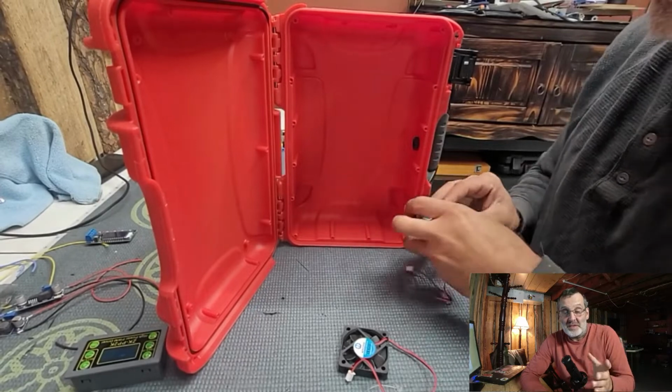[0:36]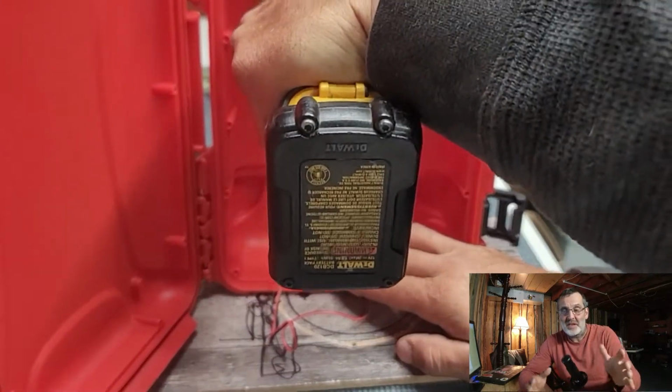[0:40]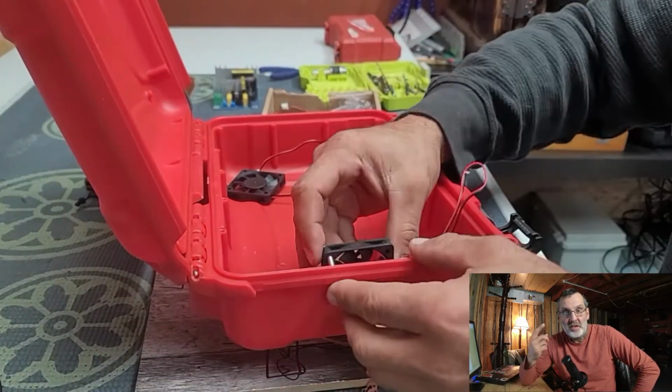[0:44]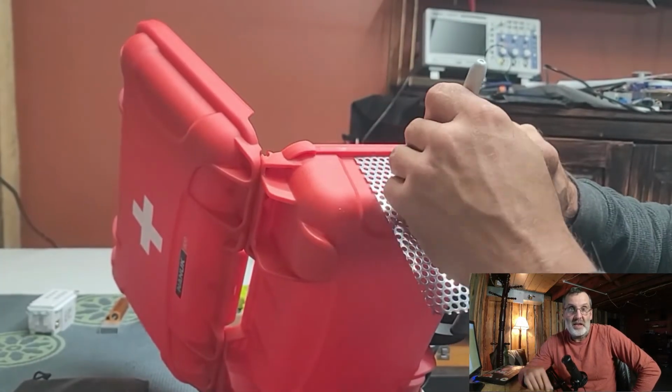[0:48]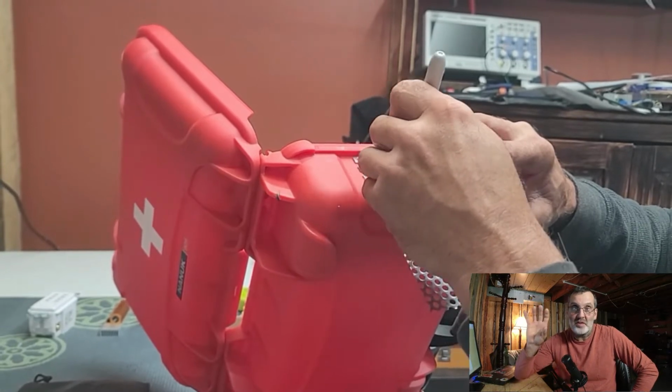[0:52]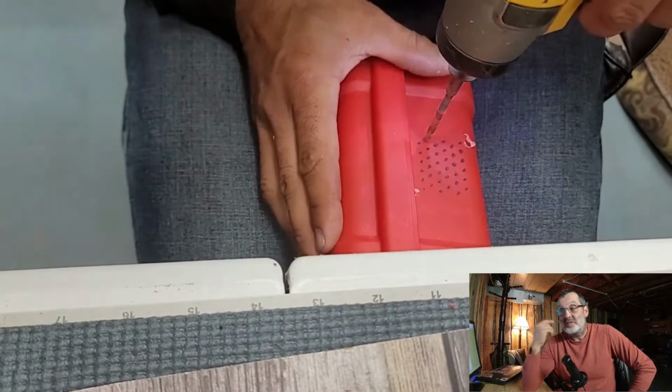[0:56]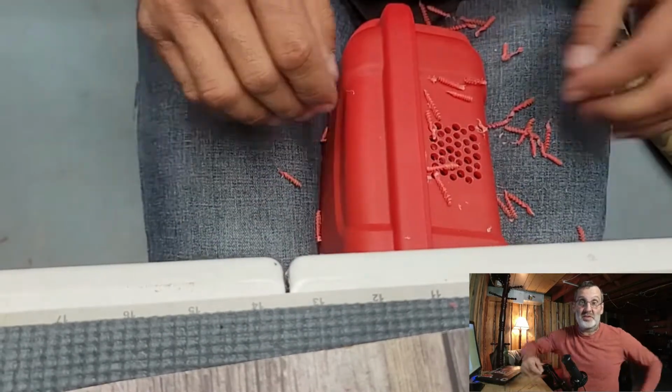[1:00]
During the course of this build, we're going to be talking about PEMF, specifically the way we build the mat and how it can benefit the brain with the coils and the pillow. Also, I'm going to be highlighting some of the key factors during the build, so you know some of the mistakes I've made so you don't make them. And also some key points, things that I've learned along the way, some things just common sense, etc.
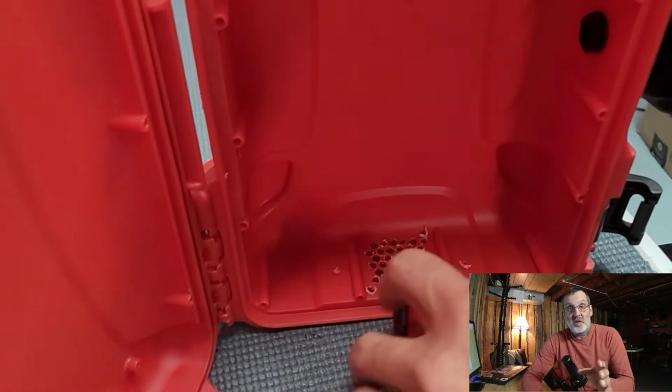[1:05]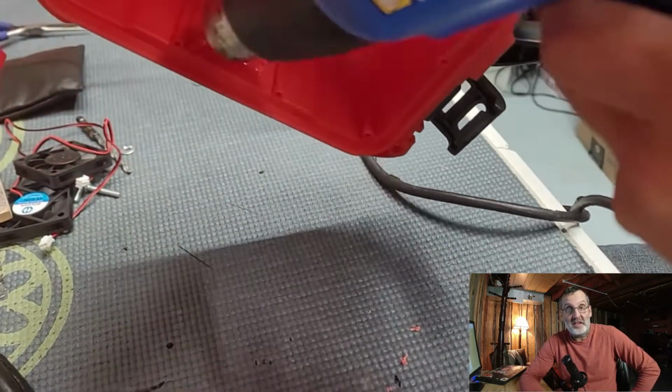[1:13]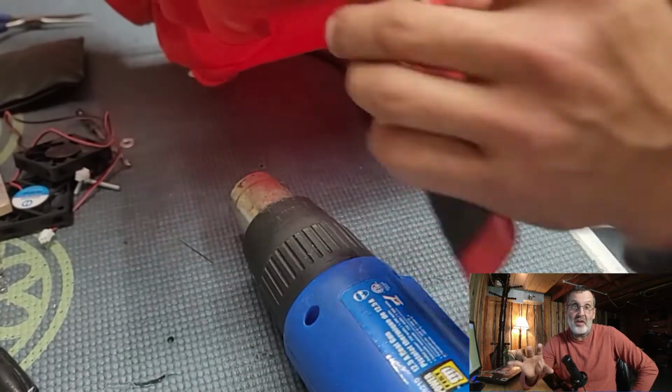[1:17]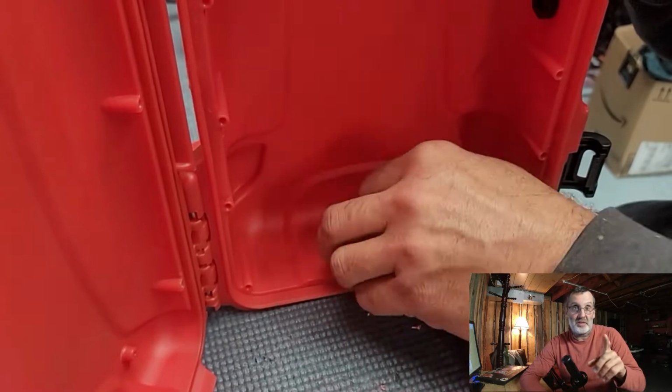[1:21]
For example, right now I decided to mount the fan on the side. We're going to have an intake and an exhaust, and as you see right there, I am melting the plastic, removing the burr, so the blade of the fan does not hit the plastic. It's really important. I learned that one the hard way, by the way.
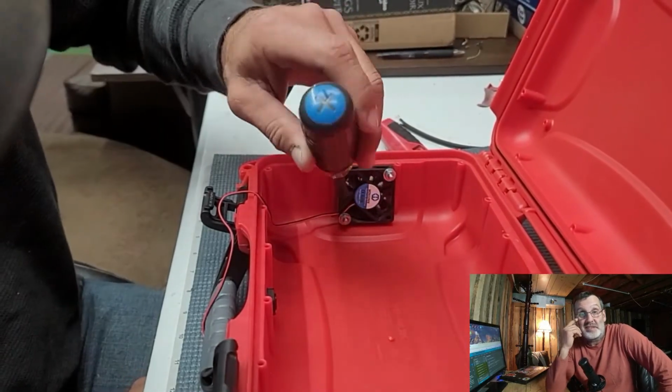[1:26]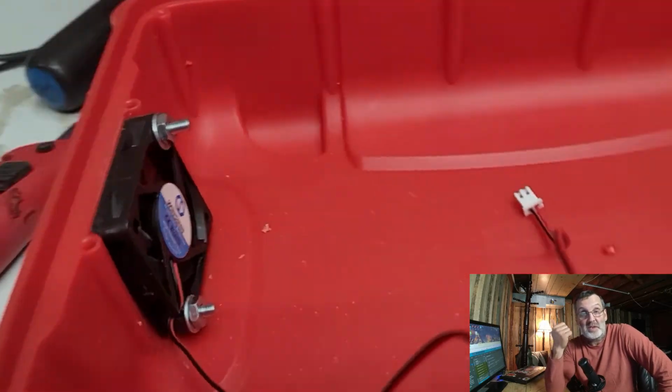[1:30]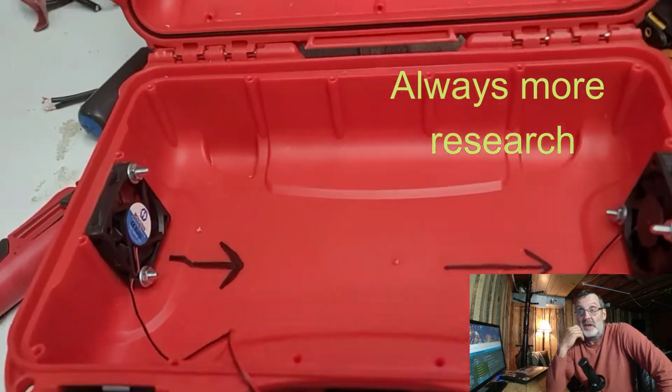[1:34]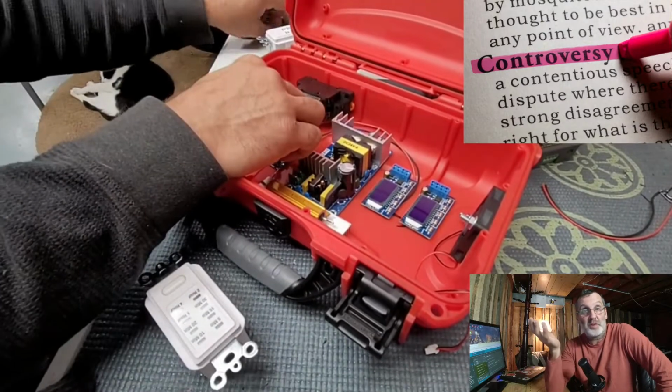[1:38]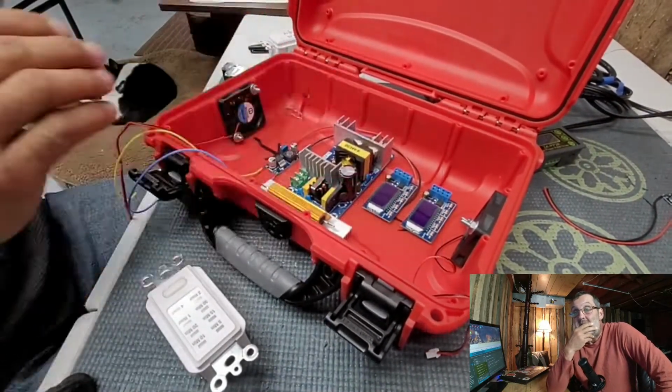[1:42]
So does PEMF help with Alzheimer's? Well, the short answer is yes. The long answer, it's complicated. One, because once again we need more research on the subject. And two, it can be controversial because that's not what we're used to. It's different. We'll talk about how it does it in a while.
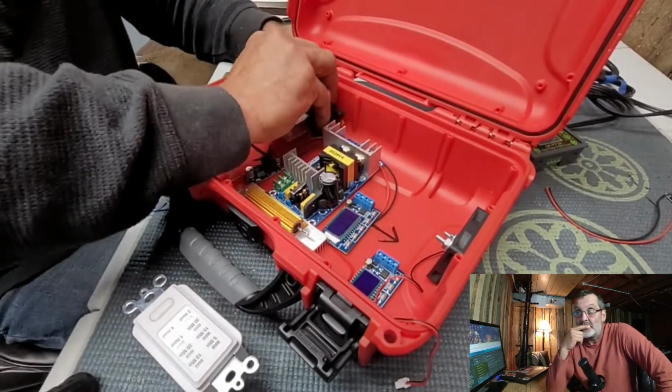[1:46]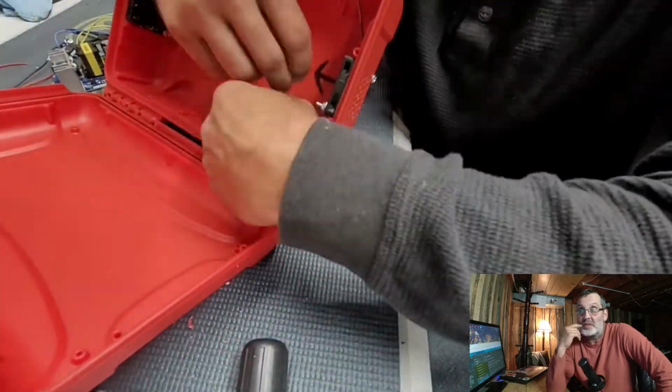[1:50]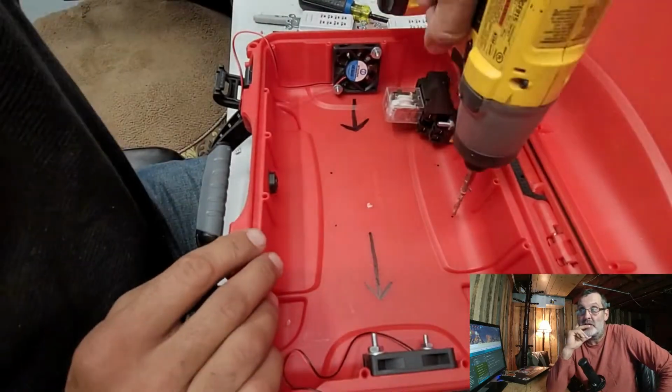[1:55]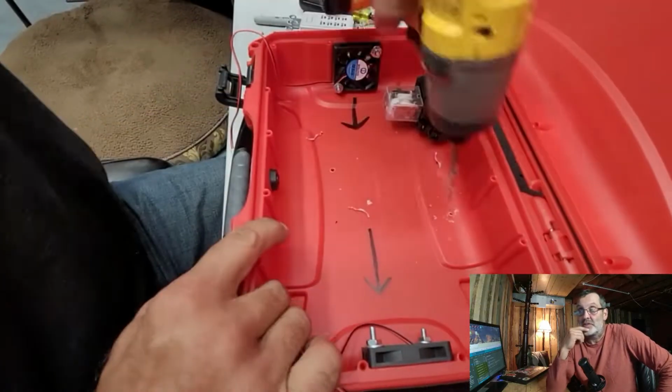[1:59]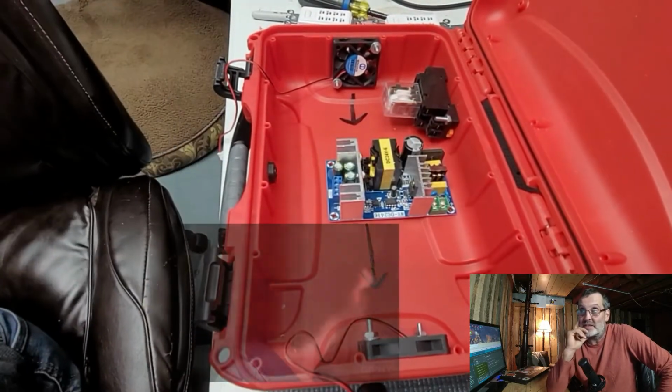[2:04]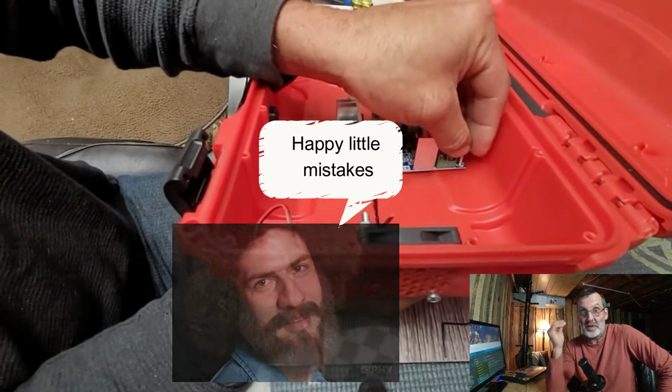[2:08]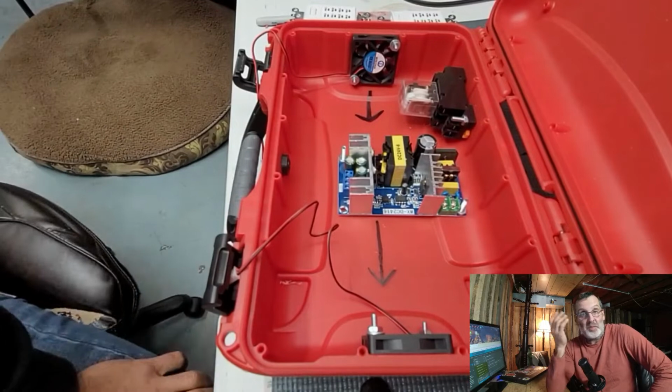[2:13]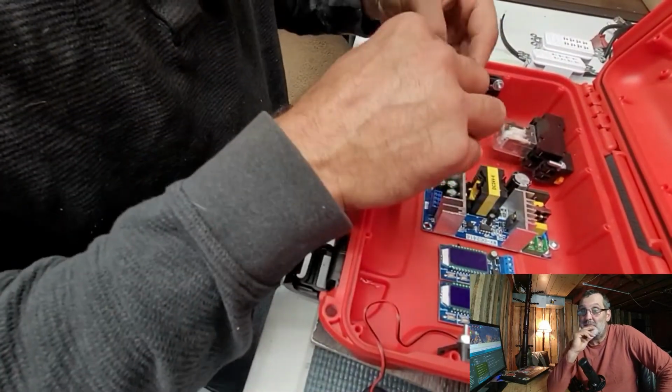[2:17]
Now, if you look at the build there, one thing that you have to do when you develop something is just place all your parts and components everywhere, and make sure nothing will interact with one another in a way that they shouldn't. You just mark your stuff, you make holes, and you will be making mistakes along the way. Don't worry about that. That's what we're makers. We make mistakes, we make projects, we make success. You'll be learning the hard way, like I do sometimes, but that's okay.
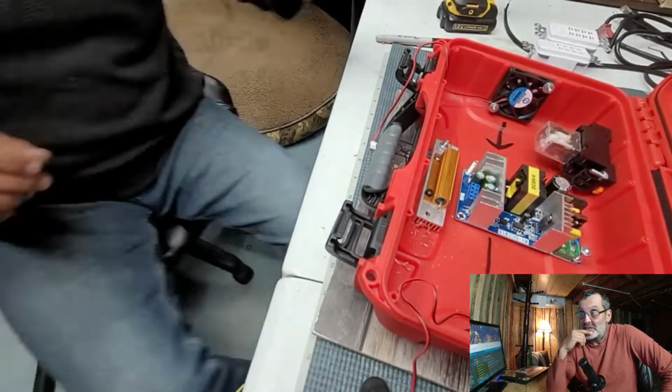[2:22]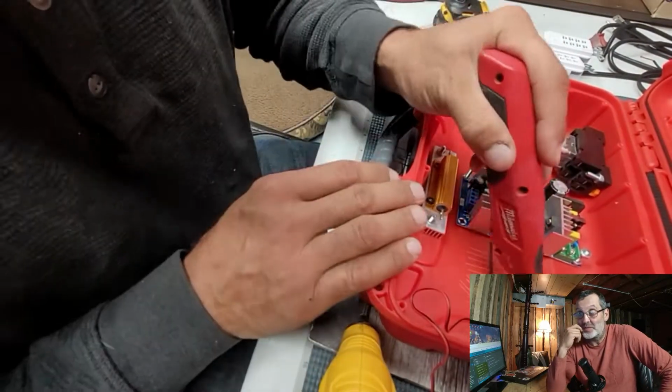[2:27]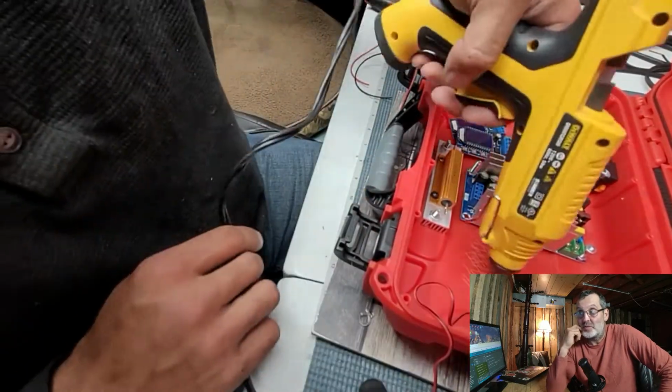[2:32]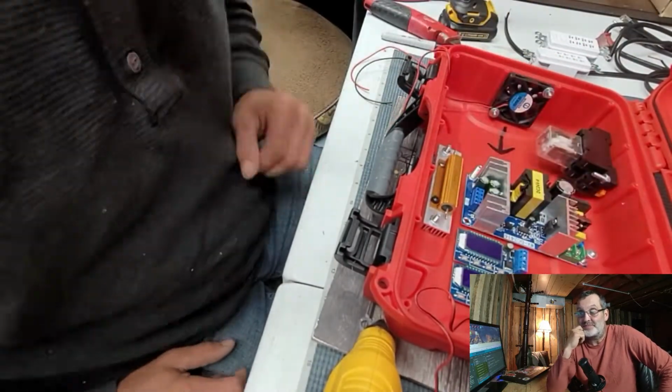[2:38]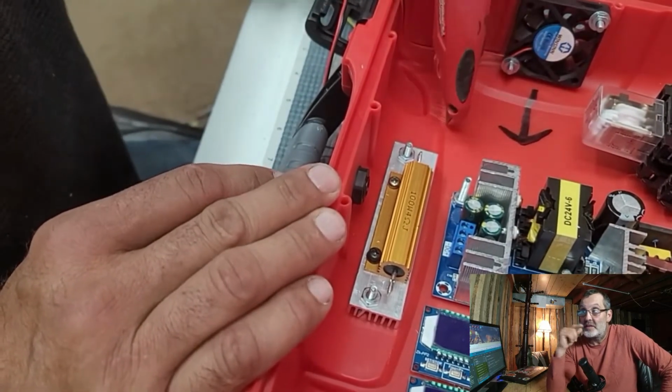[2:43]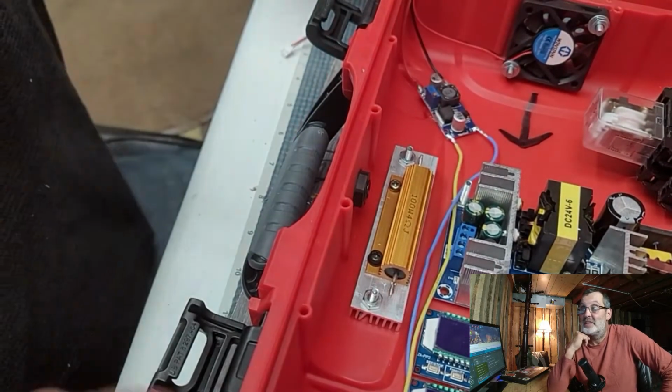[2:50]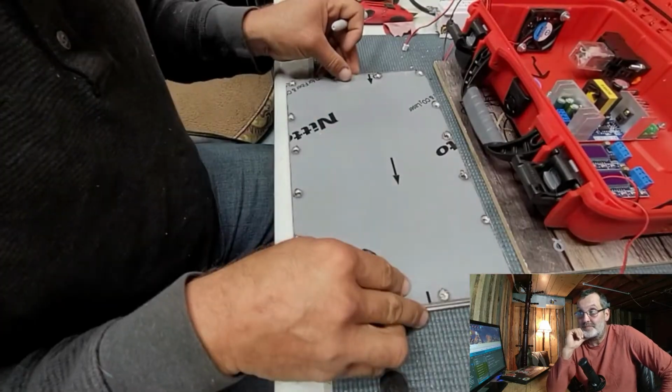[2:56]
I like to vacuum a lot as I go, keep everything clean. Metal filings and electronics don't mix, by the way, so you gotta make sure you don't do that. And here, I'm about to glue the PWM to the board, so I mark it so the glue has something to stick on. I found hot glue works really well with these items. And here, we are going to insert the buck converter that turns the 24 volts into 12 volts, because the fans are 12 volts. Computer fans always run on 12 volts, and they're cheap that way.
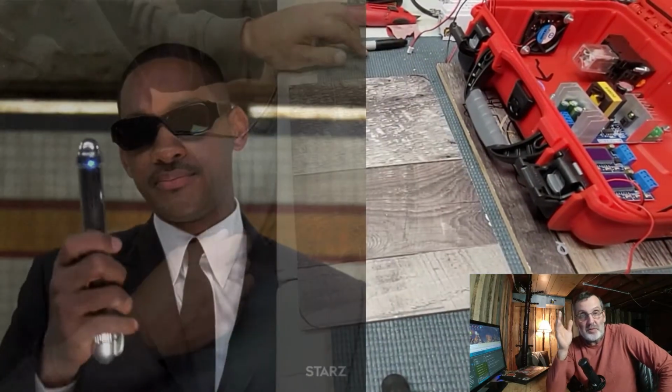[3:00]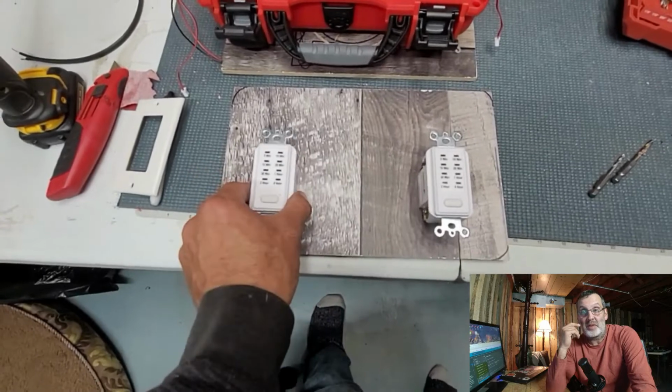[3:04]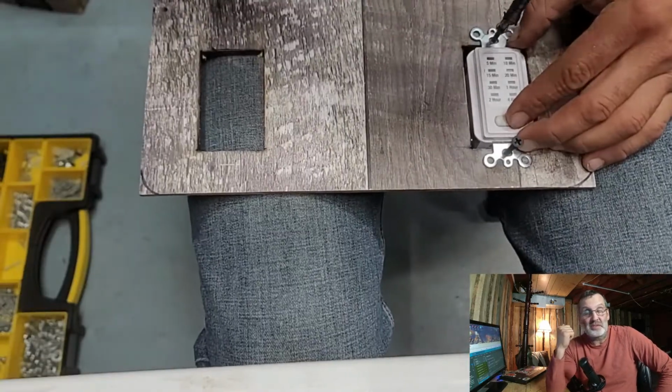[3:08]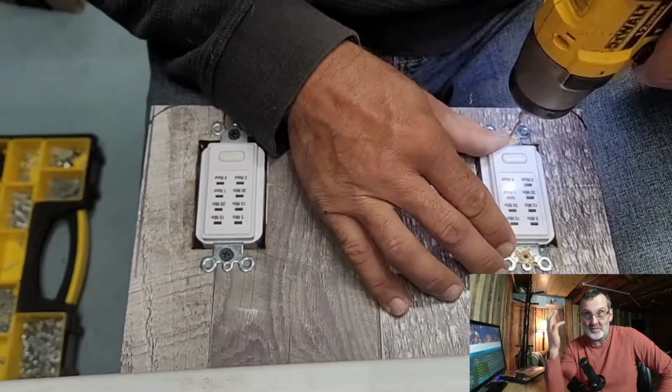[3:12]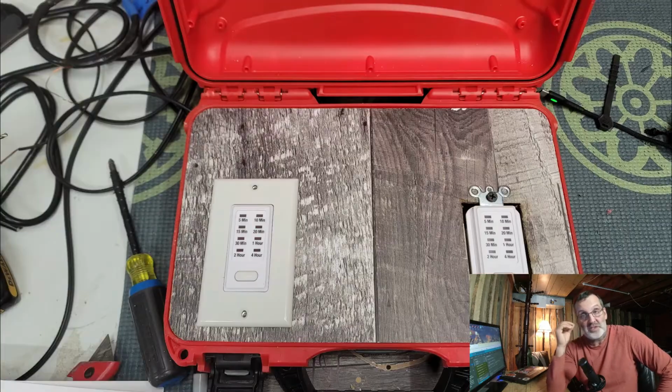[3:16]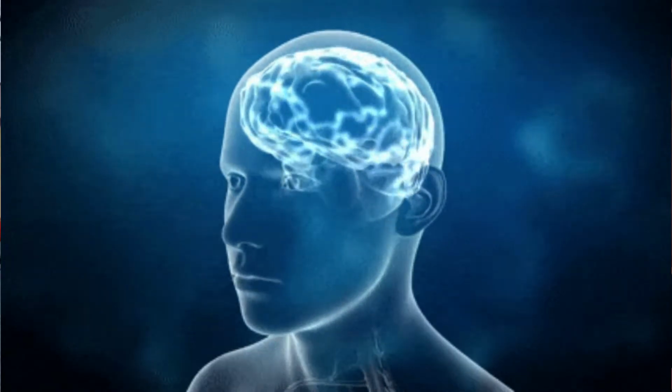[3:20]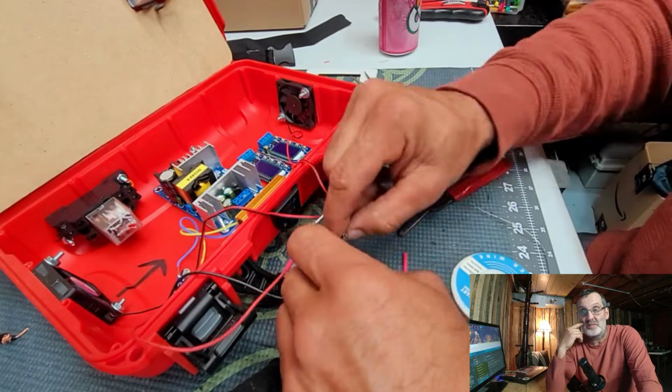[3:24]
All right. Can PEMF improve your memory? Yes, that is probably one of the best things to improve memory out there, along with good diet, brain exercise, and practicing. But PEMF has been shown to stimulate your brain very well to do that. And I'll have some links in the description so you guys can see what those things are.
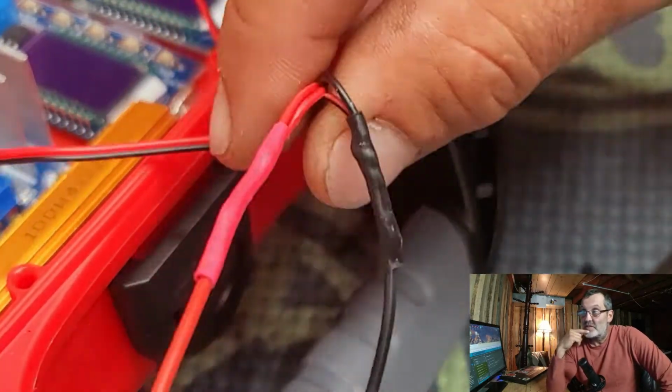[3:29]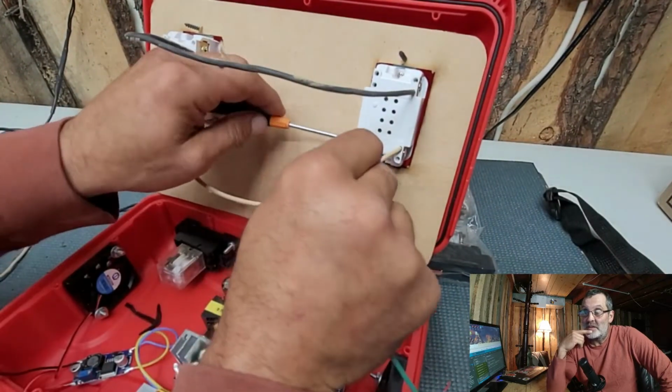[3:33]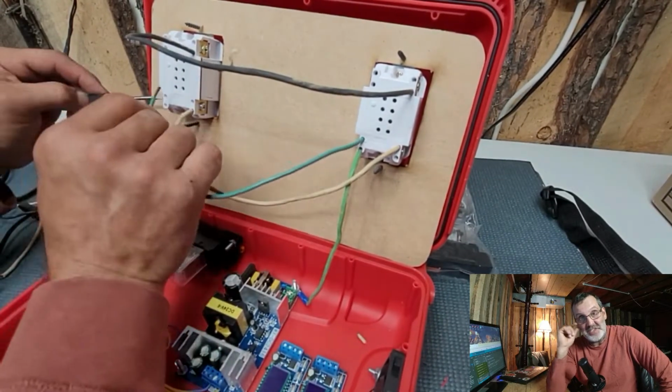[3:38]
So now I just wired the fan together, and now I'm putting in the ground, and you're going to see me wiring and taking the wires off of these machine parts quite a bit because of the mistakes I made.
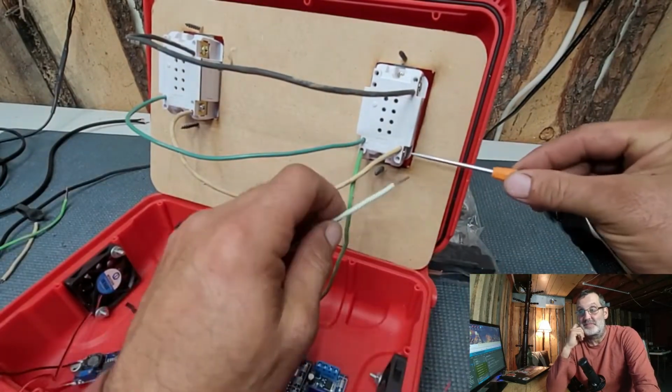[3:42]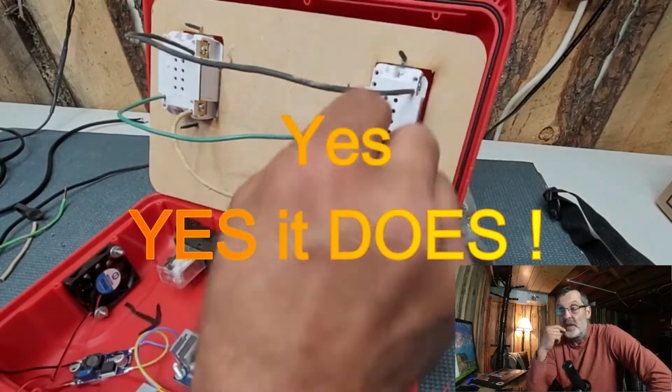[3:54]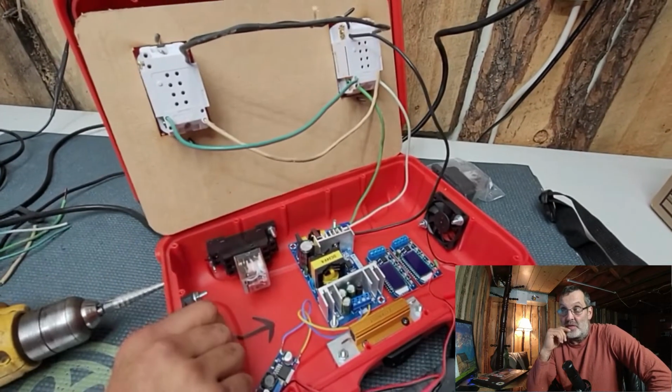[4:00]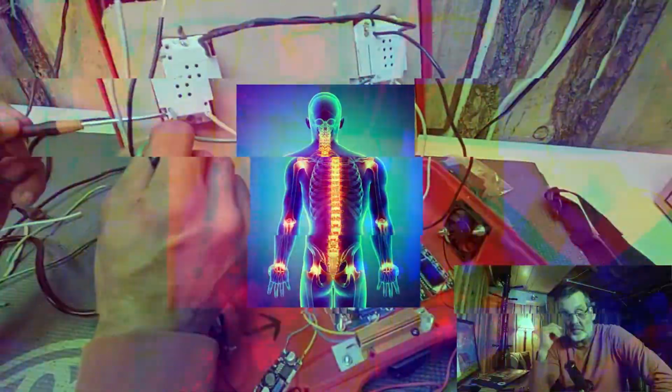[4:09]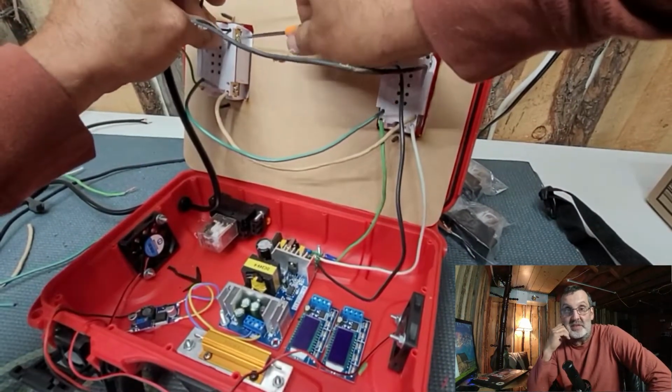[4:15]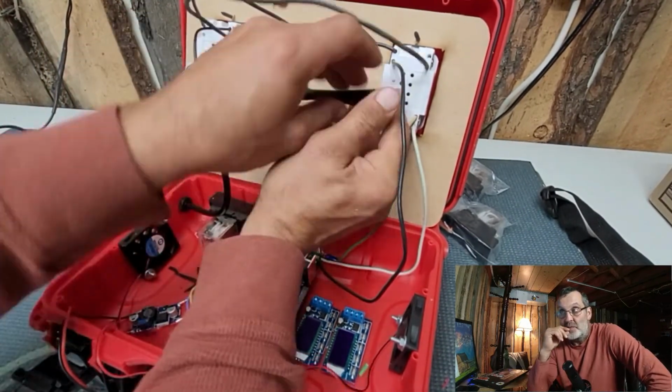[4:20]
So does PEMF help with Alzheimer's disease, also known as AD, by the way? Yes it does. As much research has been conducted, many results have been extremely positive. One of the big reasons why it appears to work is that it reduces inflammation. First of all, we all know that PEMF interacts with the cells in a very powerful way. I touched on that many times during the video series that we've been making. But it reduces inflammation, which helps drastically to conduct the electricity.
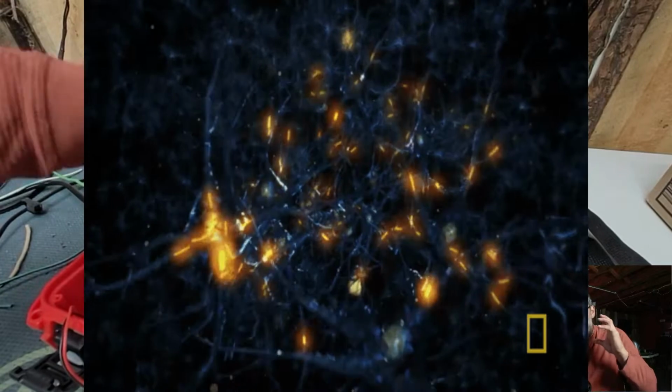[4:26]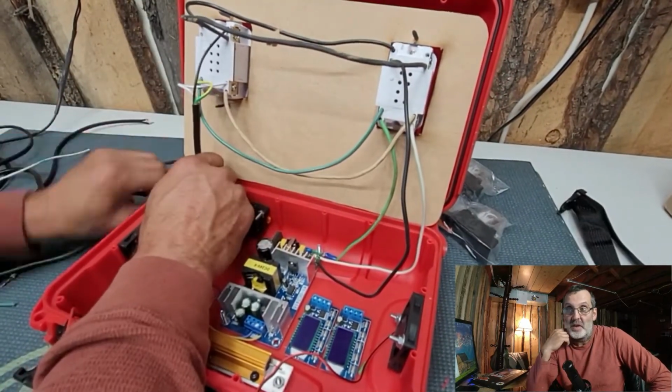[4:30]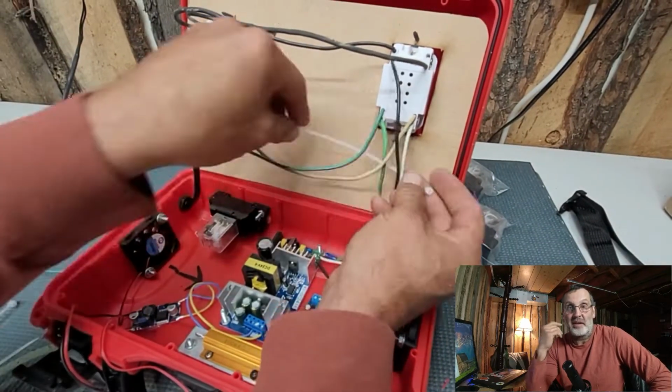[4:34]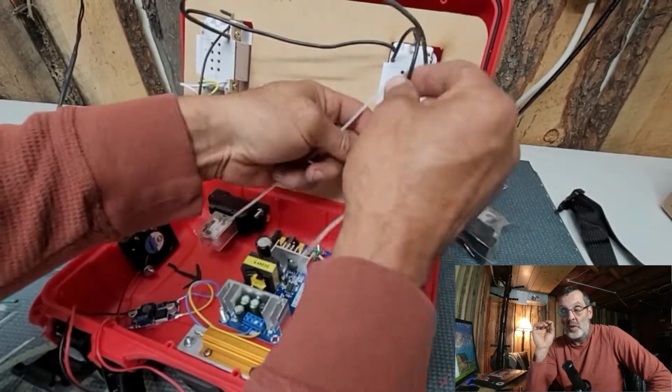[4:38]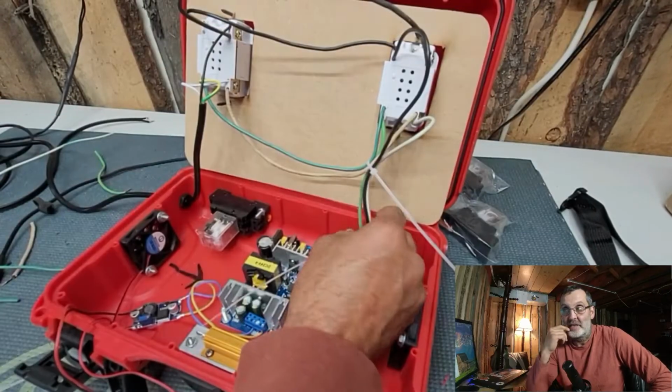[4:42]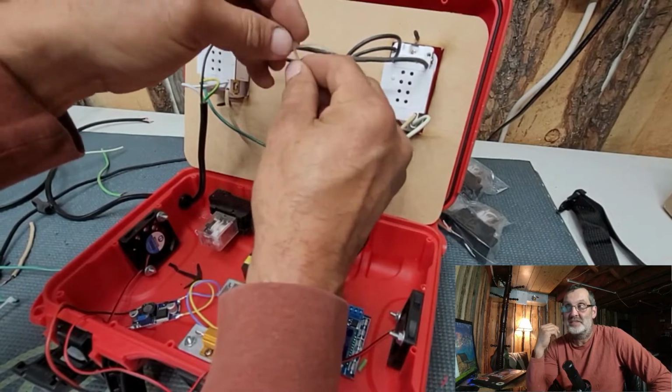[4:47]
Now there's a bunch of chemical composition and reactions that happen in there when you read those research papers. Every five words you've got to research what they mean by the words they're using, but the gist of it is it totally assists the brain to keep itself clean. And that's the key word right there. Keep yourself clean, keep the cells clean, keep everything going.
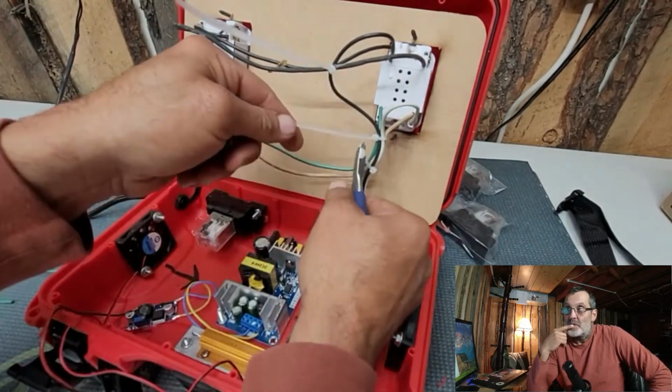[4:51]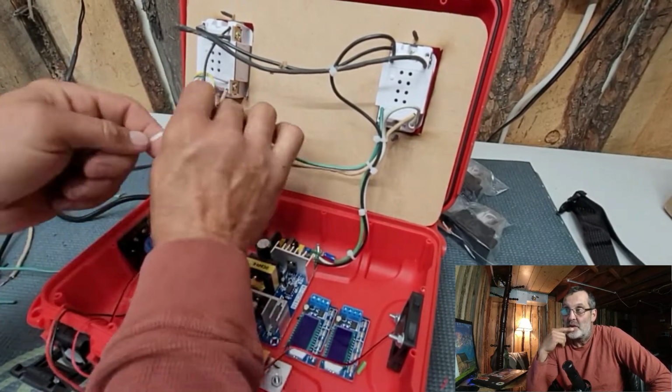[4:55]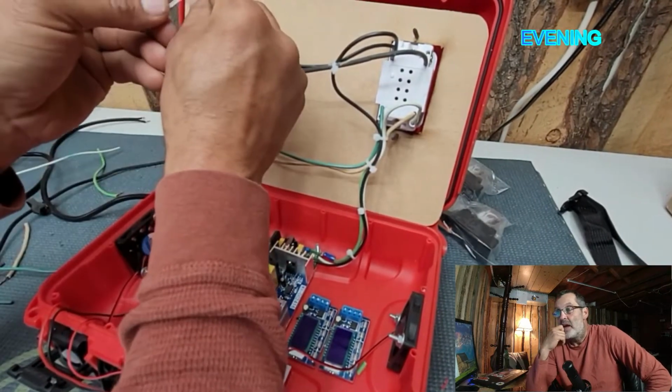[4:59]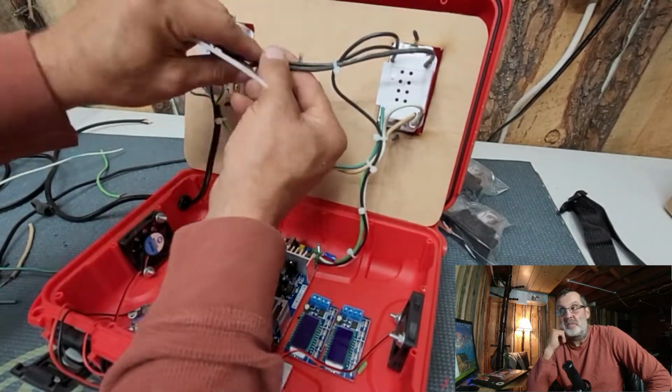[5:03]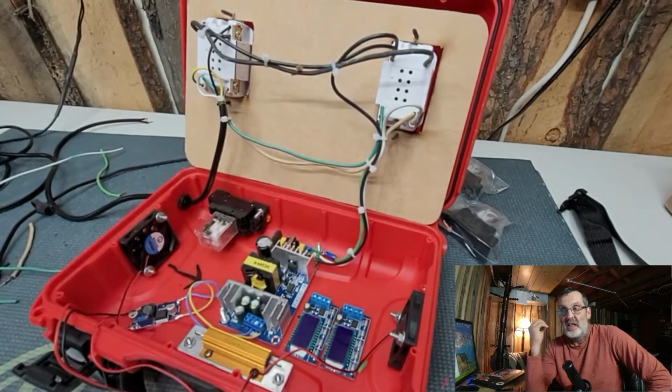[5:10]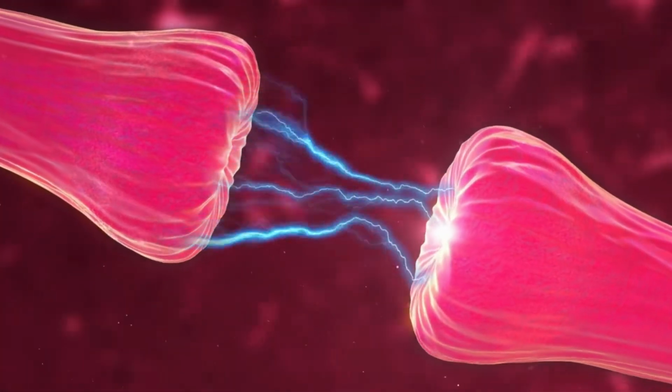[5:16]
Now, you probably noticed there that I've got two timers, one called morning and one called evening. The morning one has higher frequencies. It'll be above 35 hertz, and that's the one to energize the brain. That's the one to get things cleaned up in there, reduce the inflammation, make the blood flow, make the connection between the synapses happen faster.
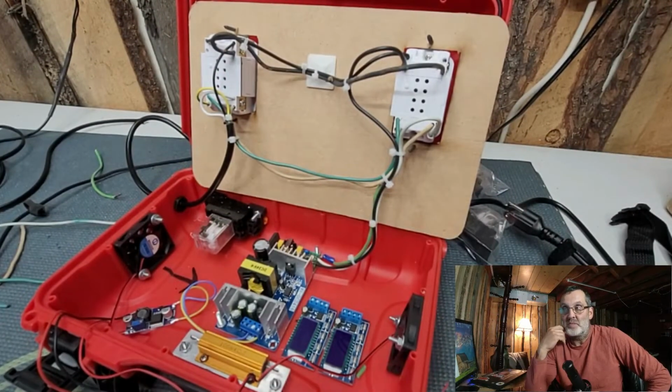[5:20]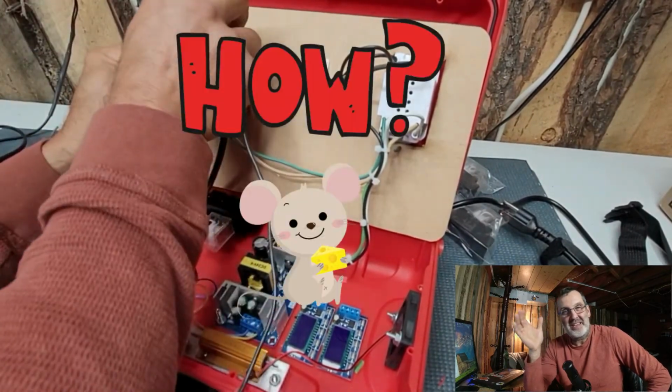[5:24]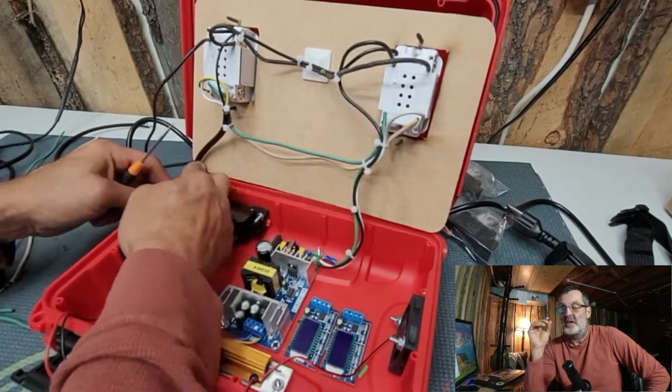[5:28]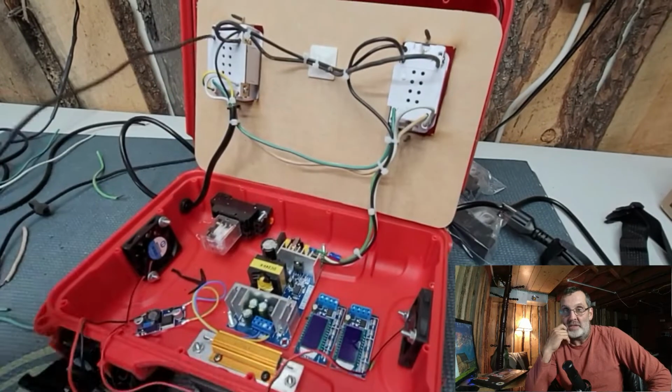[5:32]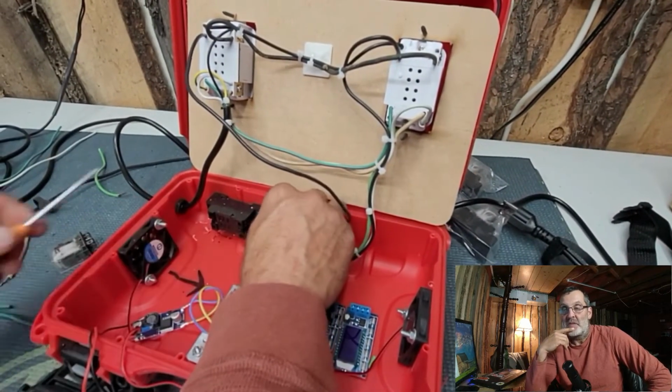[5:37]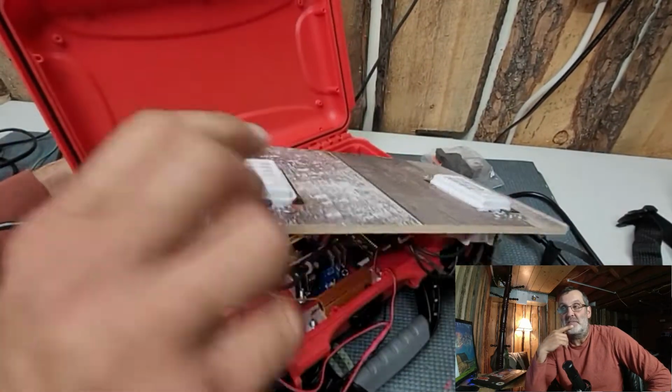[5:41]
I mean, the research showed, when they used mice, that mice that had Alzheimer's disease, how did you get a mouse to have Alzheimer's disease? I don't know. They never explained that one. But anyway, they showed that after a month of being exposed to those frequencies, they were reversing or slowing down the effect of AD on the mice.
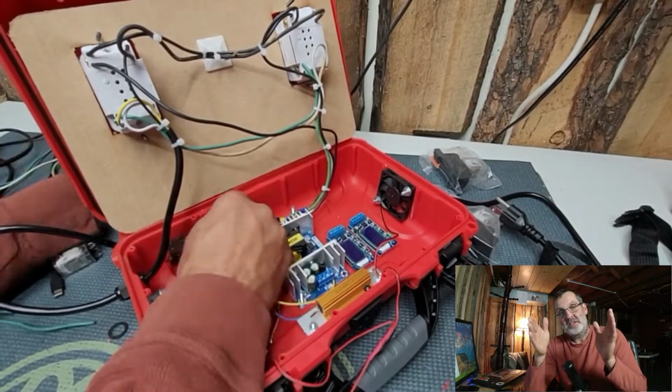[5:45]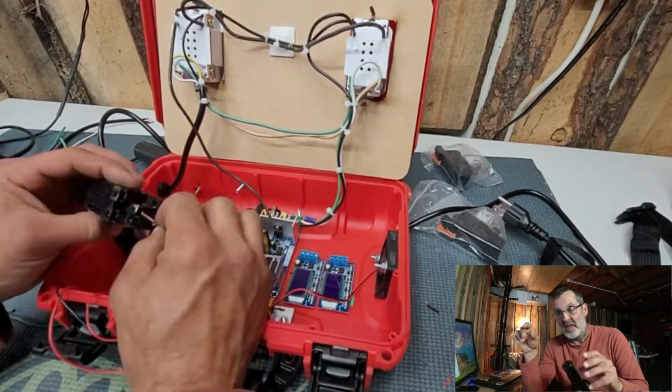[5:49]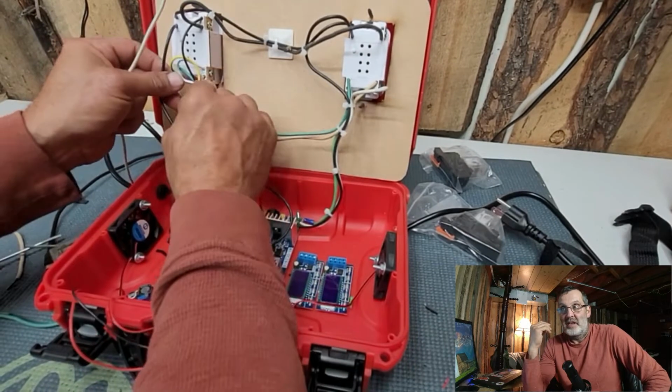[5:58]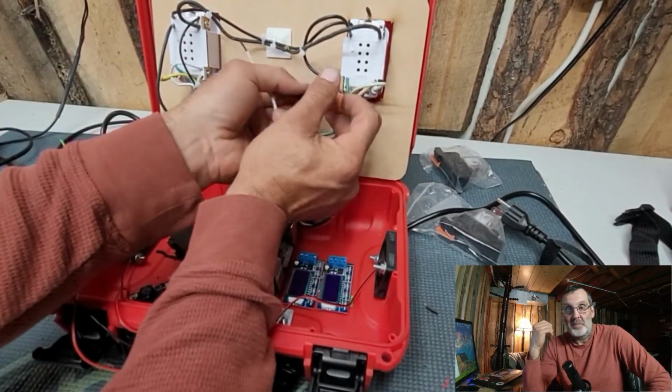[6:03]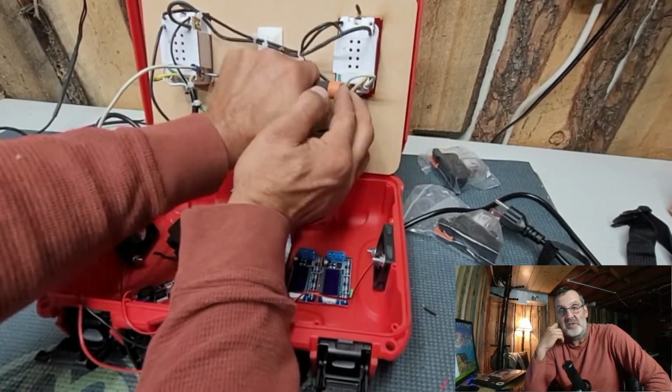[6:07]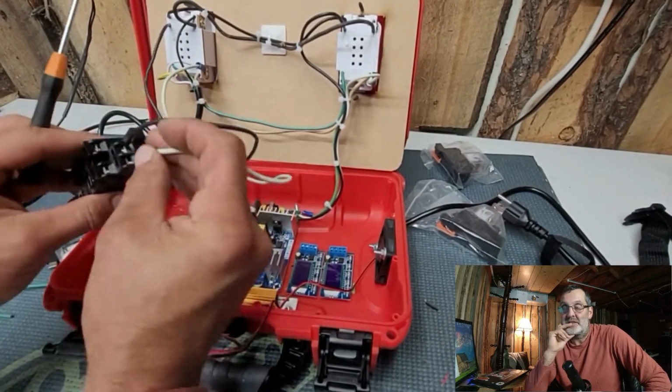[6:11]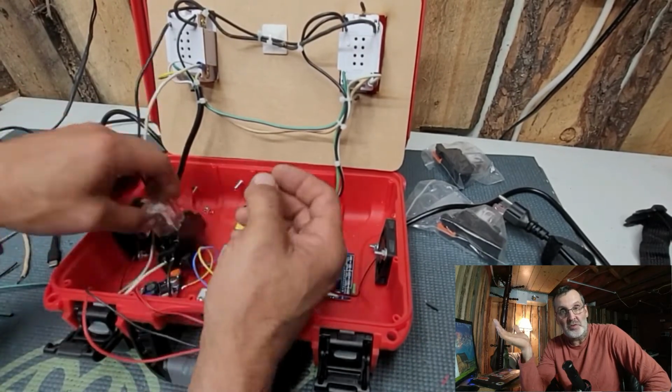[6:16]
And when they compared the mice with AD to the mice of the same litter without the AD, they found that they were acting the same. The levels in their brain that they measured were perfect. So they concluded that exposure to PEMF in the brain was able to reverse or slow down Alzheimer's disease.
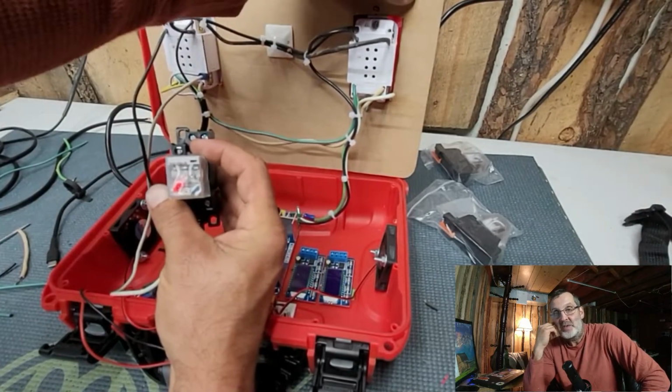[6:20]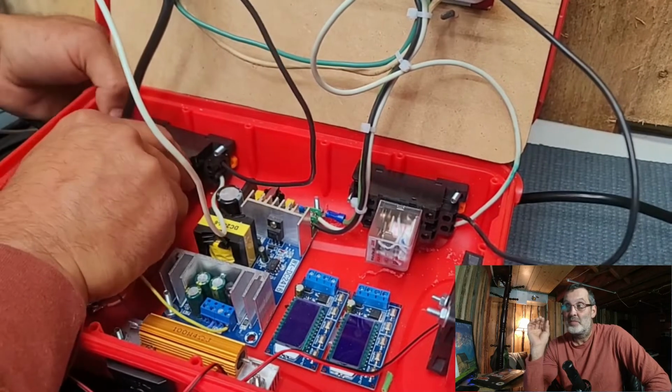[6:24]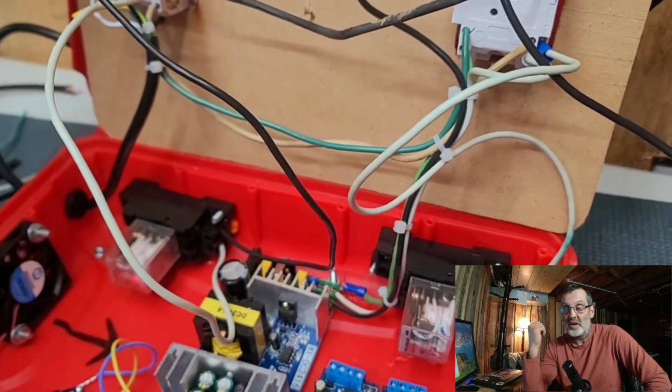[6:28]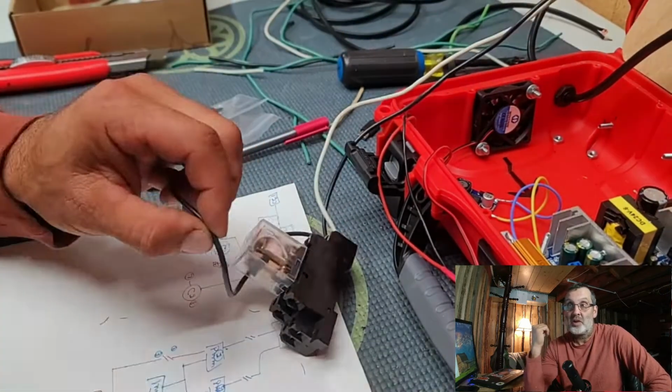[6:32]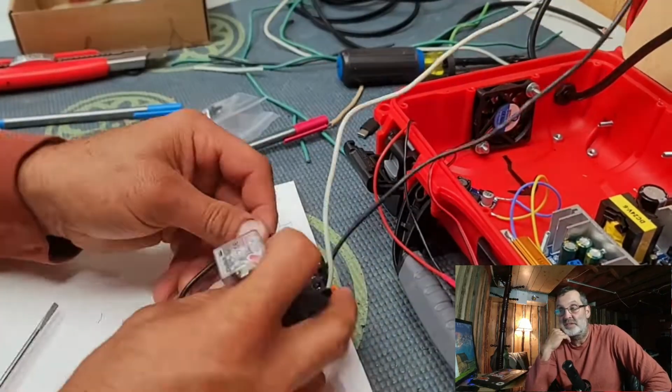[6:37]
Now, if you have Alzheimer's disease in your family, statistically speaking, you're more prone to face it too when you're aging. We don't know exactly why that happens yet, but one thing we seem to know is that with proper medical treatment, proper diet, proper everything, you have a great chance of reversing or avoiding this if you use the PEMF system.
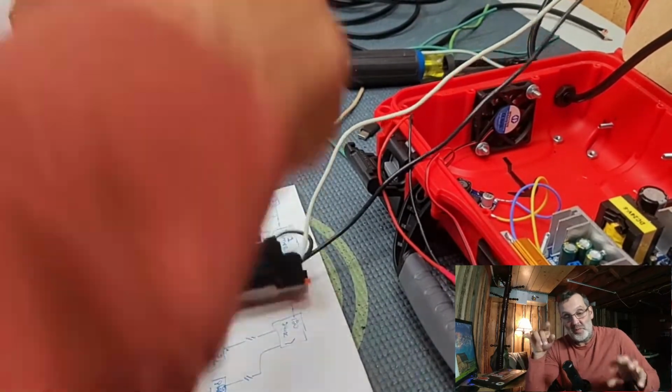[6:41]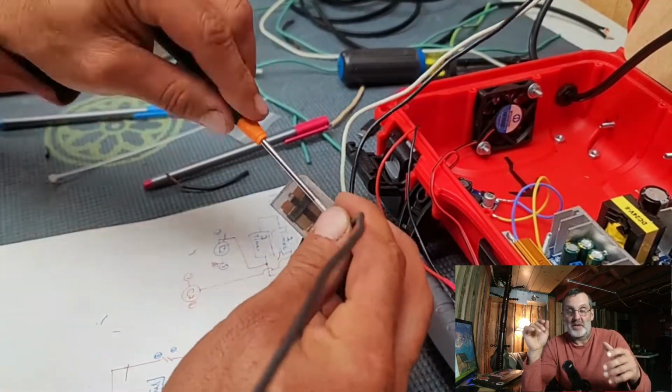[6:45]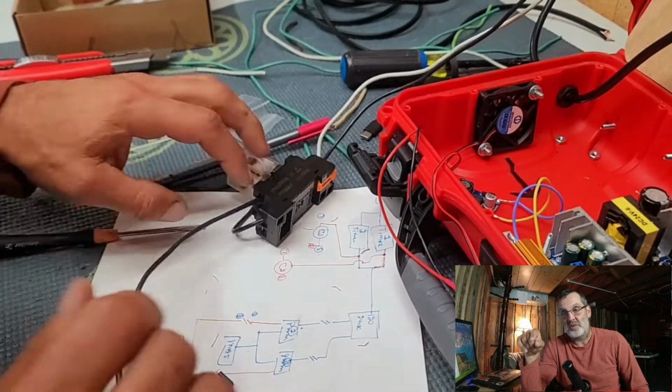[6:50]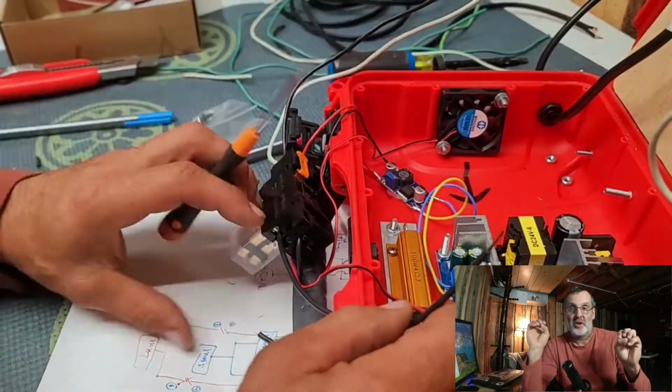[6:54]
Now let's get back to the build. You see, I put two relays, and the reason why is when I had only one relay, I was able to make it work, but then you push the one timer, and if you push the other timer, it would also activate the other one, and they were both on at the same time, and both PWMs were flowing waves at the same time.
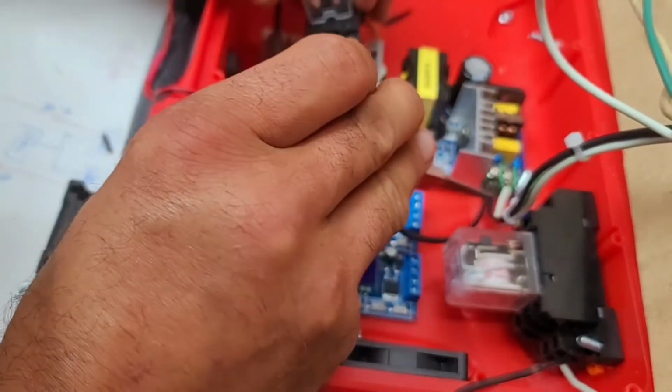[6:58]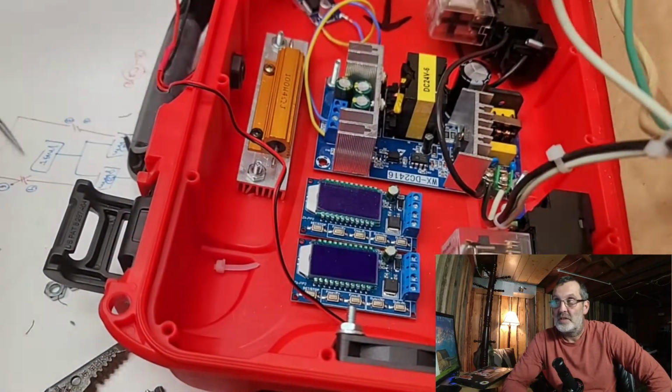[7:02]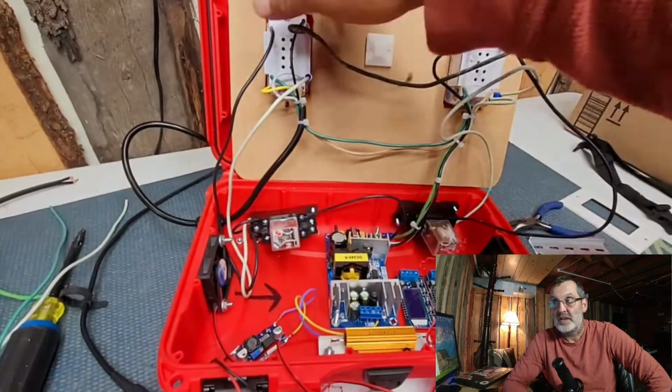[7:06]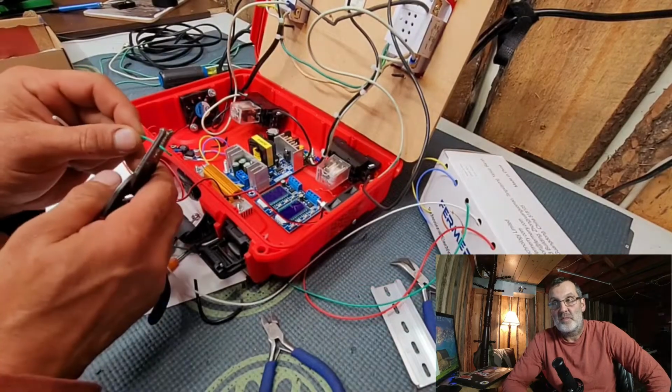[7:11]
So right now I'm putting the power onto the main power supply. Nothing too spectacular. There'll be a drawing for you guys to watch at the end, and then you can just pause the video and make a screenshot of it.
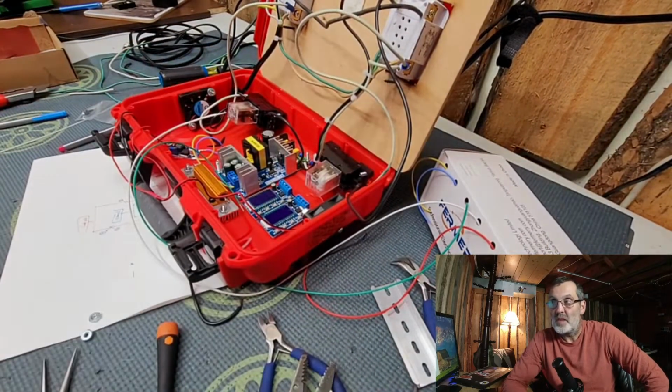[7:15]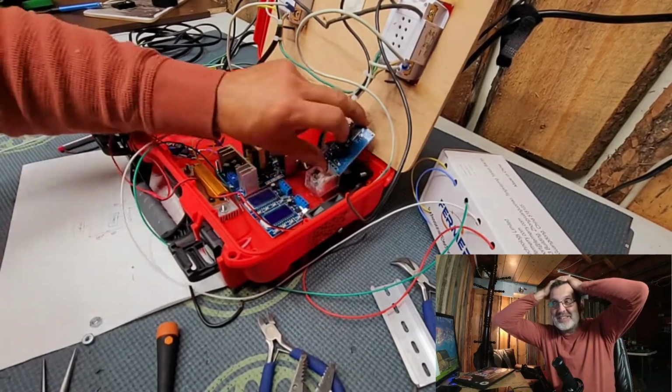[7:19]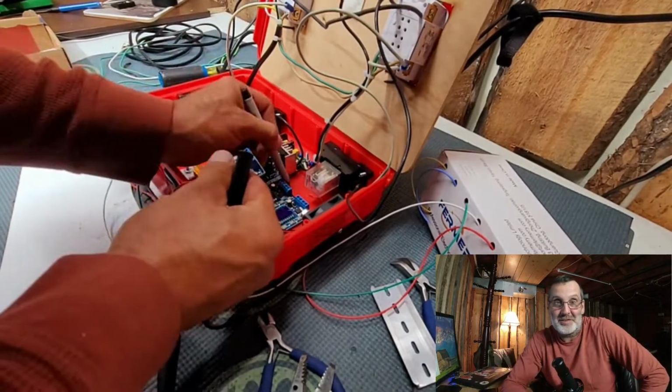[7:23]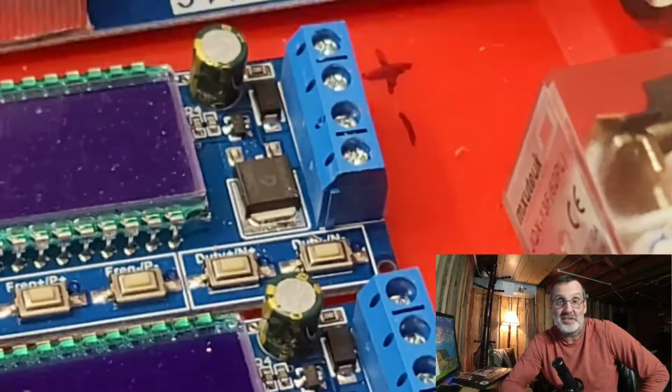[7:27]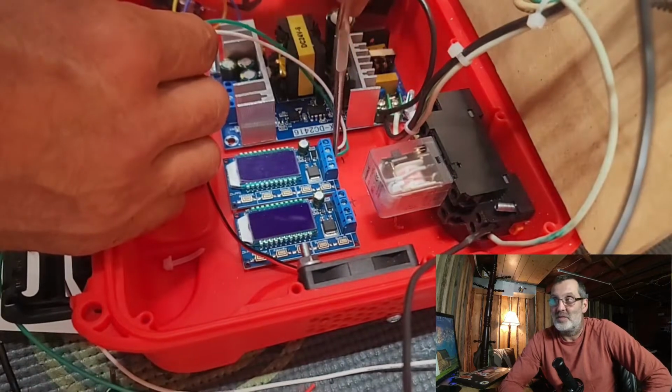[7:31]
Now, watch this part. This is where I'm about to create myself a headache for the next hour or so. I'm laughing now. I wasn't laughing at the time. I was actually cussing in French quite a bit. Not in a bad way. I was just like, what the hell's going on?
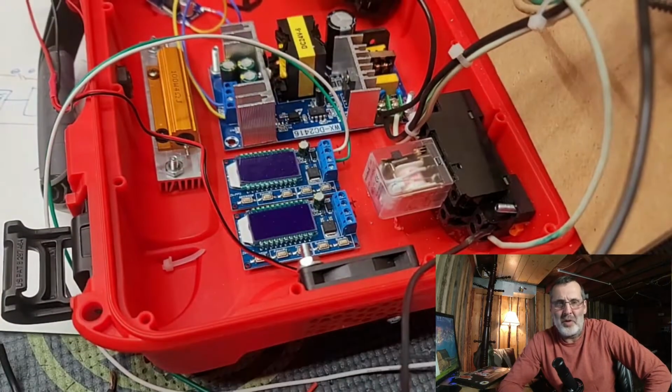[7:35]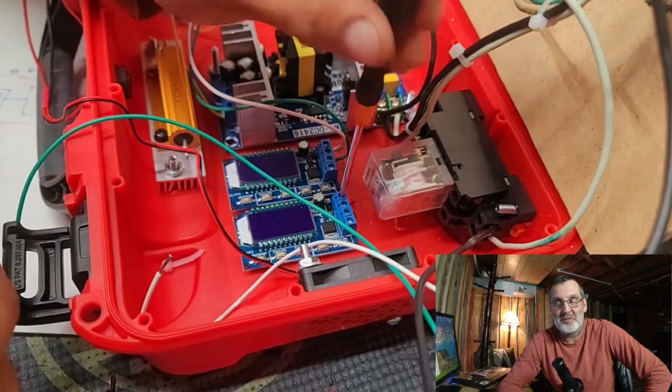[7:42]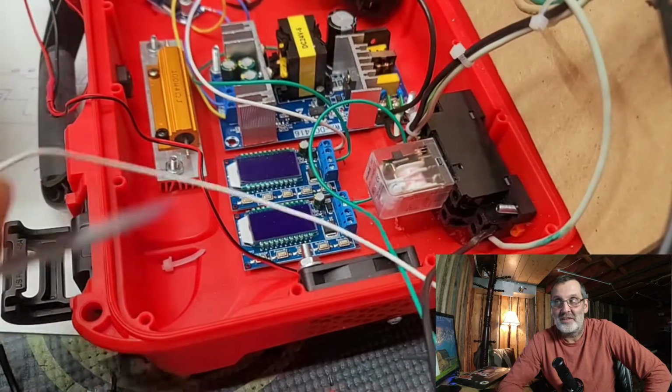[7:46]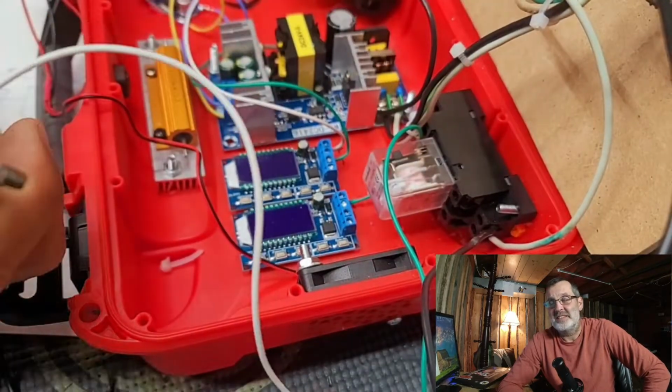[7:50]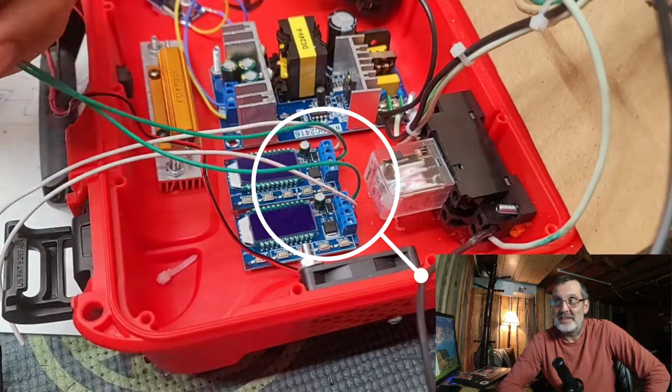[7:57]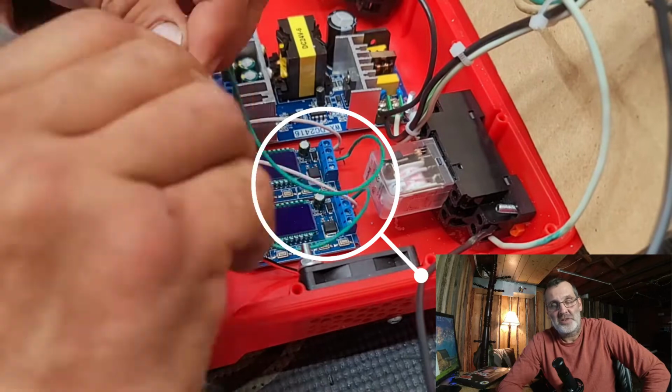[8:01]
See, I put the white wire and the green wire, and I marked my plus and minus so I wouldn't make a mistake. And look what I'm doing next. I'm going to put the green wire first, followed by the white wire. And here we go, green wire and white wire. And I did not notice I did that, obviously. And then I put the two green wires together and the two white wires together, and I put them to my power supply, which created a short circuit.
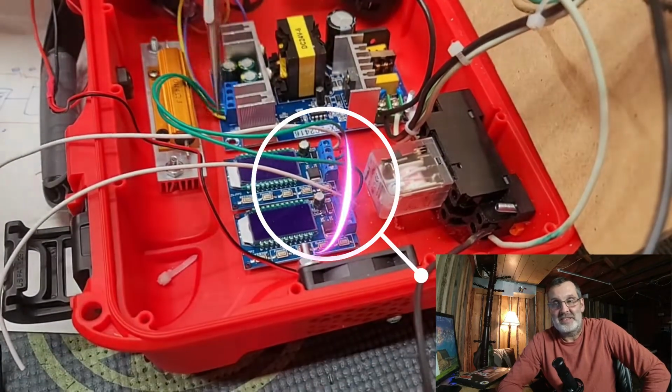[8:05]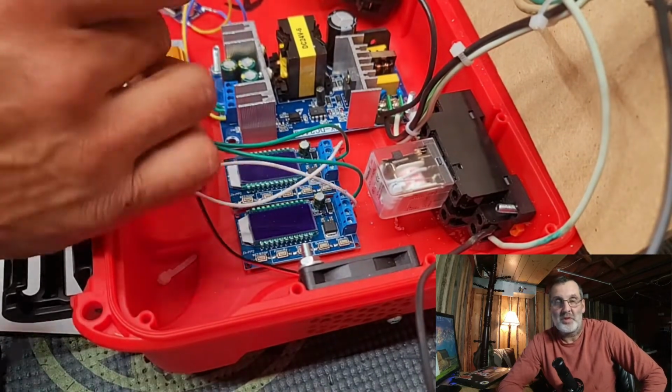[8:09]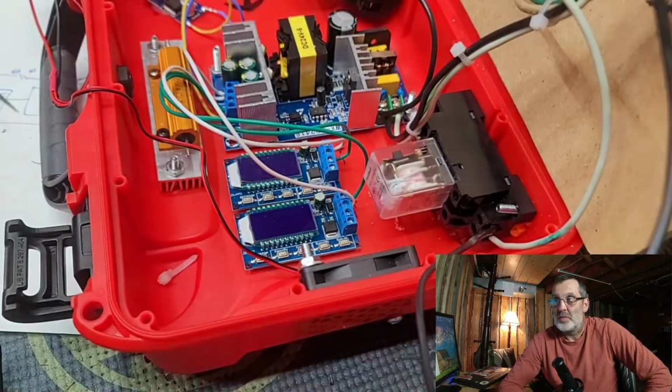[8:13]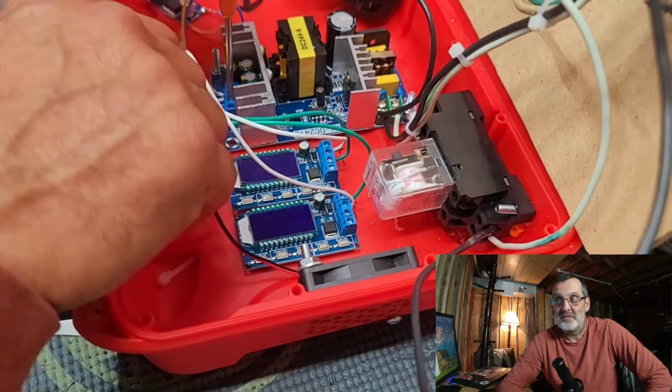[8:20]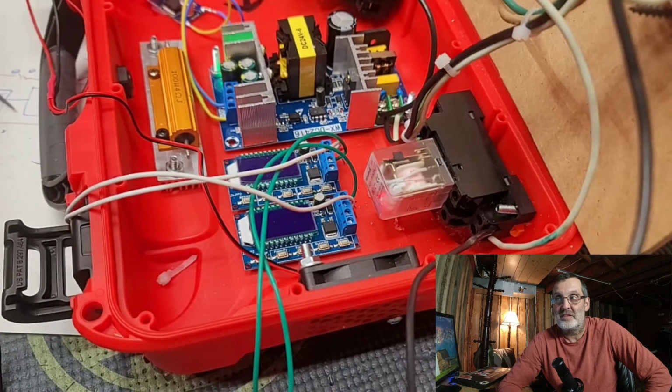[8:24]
And then you're going to see in a second, I'm going to be turning on the power. There'll be no flame, no nothing. Spoiler alert, nothing bad happens. But the power supply does not come on. You don't see the green light glowing in the corner there. Nothing. I take that off. I'm like, what's going on? Turn it on. Nothing. Turn it off. And there you go. Green light is on. So I don't know what's going on. And I went on like that for quite a while.
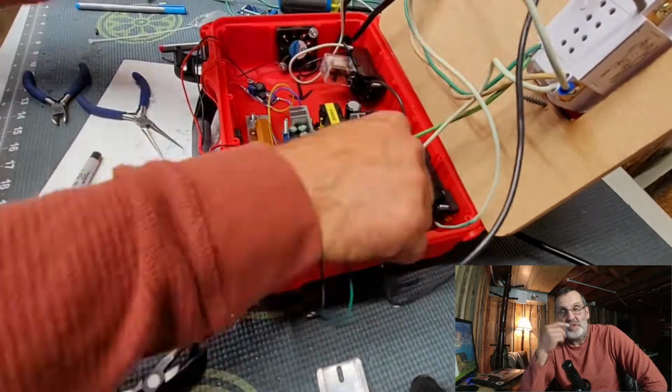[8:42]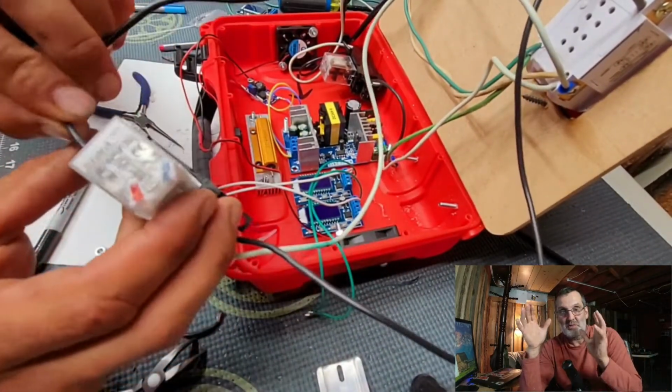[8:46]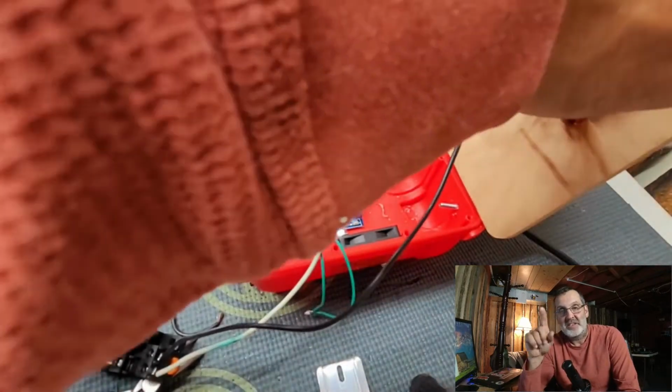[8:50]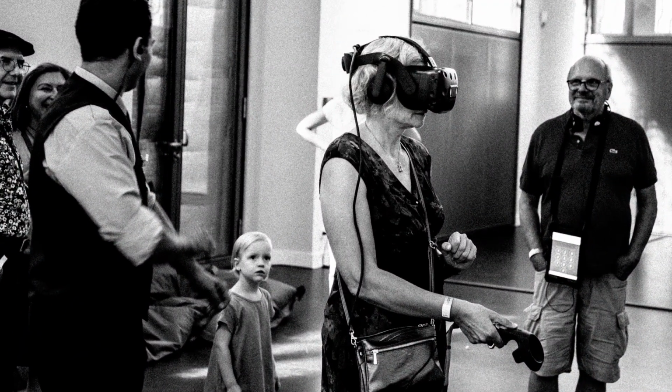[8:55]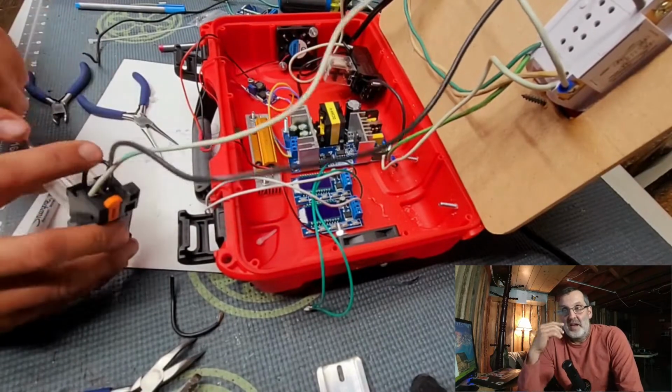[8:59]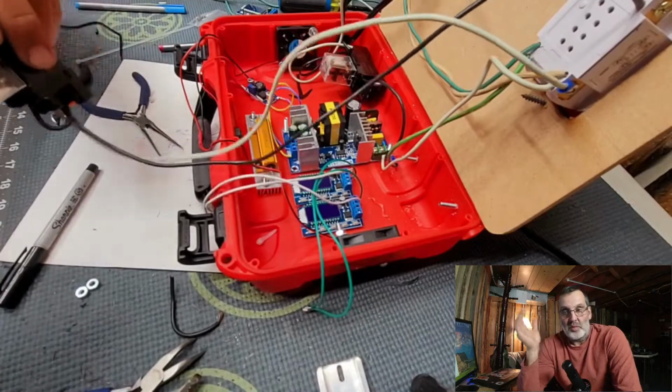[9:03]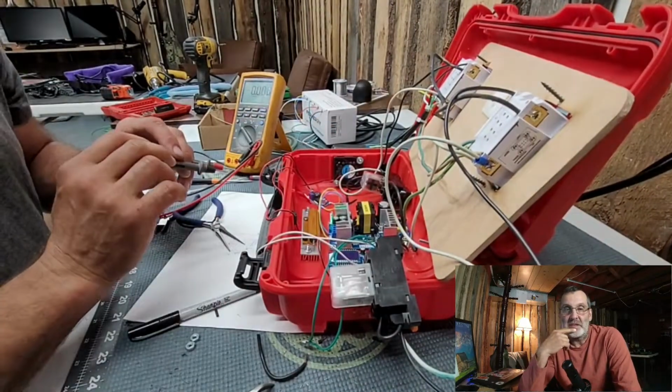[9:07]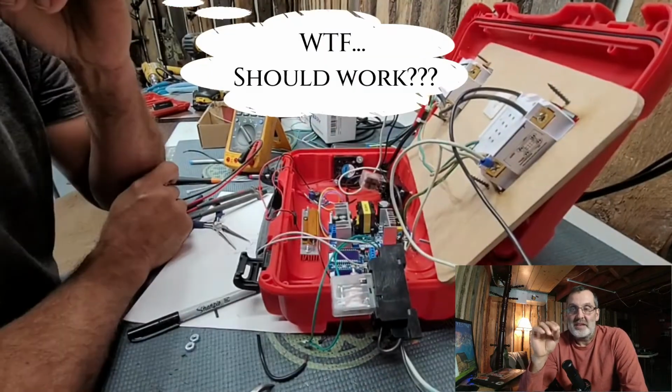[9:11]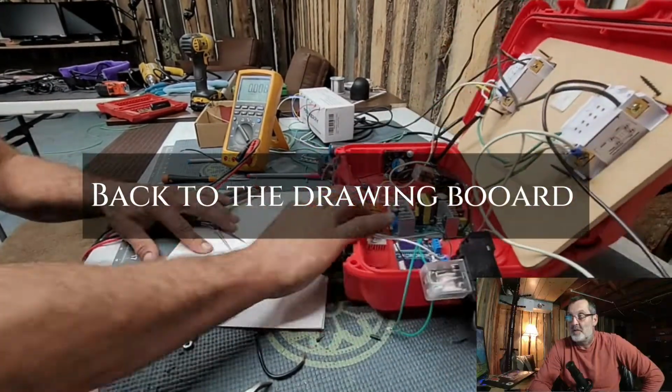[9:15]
So one of the most amazing pieces of research I read was on how PEMF can improve memory and improve focus, and they went into detail about why they think this happened. But what was really important to me was the fact that they actually sat people down and measured their brain activity, their recollections and all that stuff. Initially, you'll find some research that said there is no real proof of that, but if you look more in detail, you'll find out that they need to make testing more than just a week long, right?
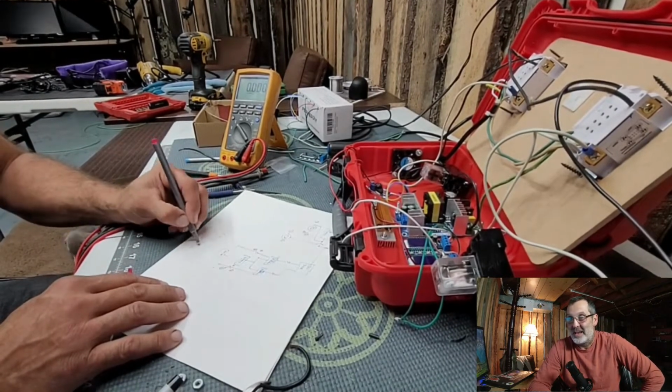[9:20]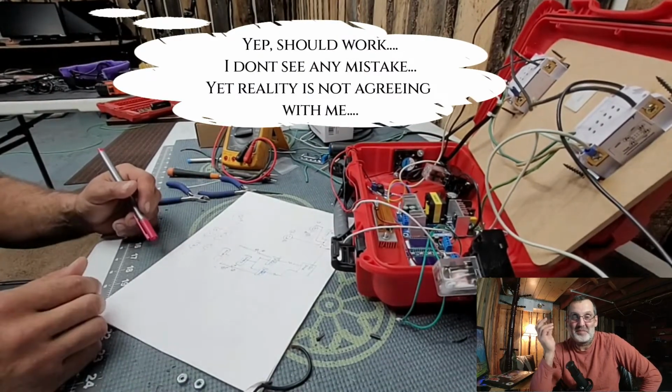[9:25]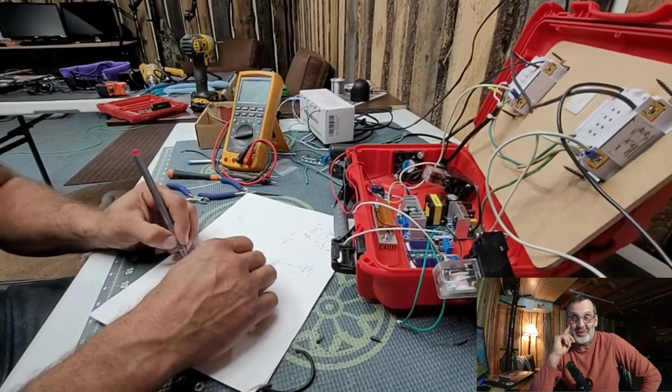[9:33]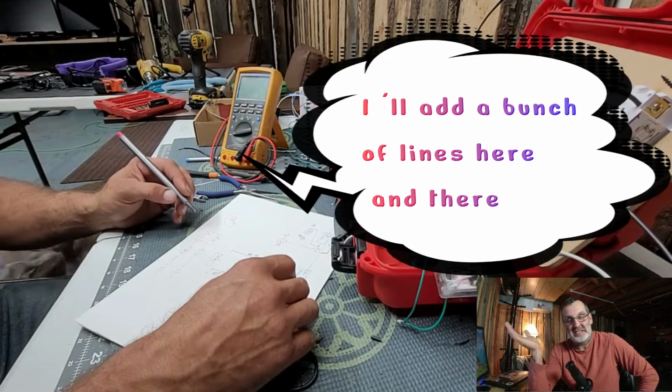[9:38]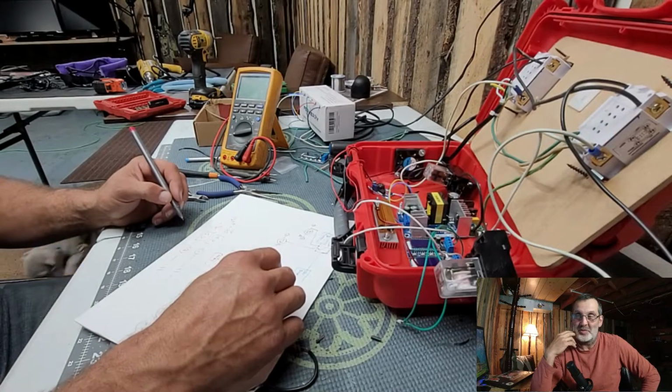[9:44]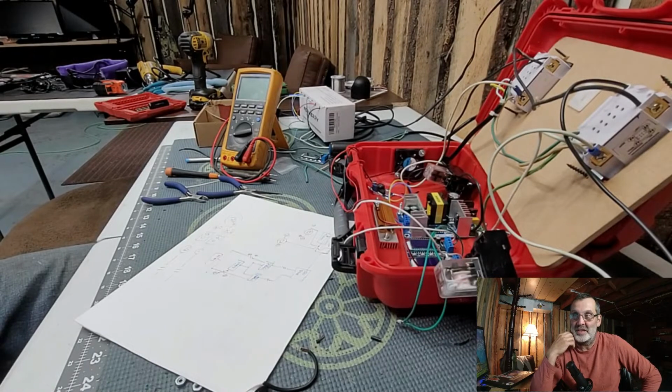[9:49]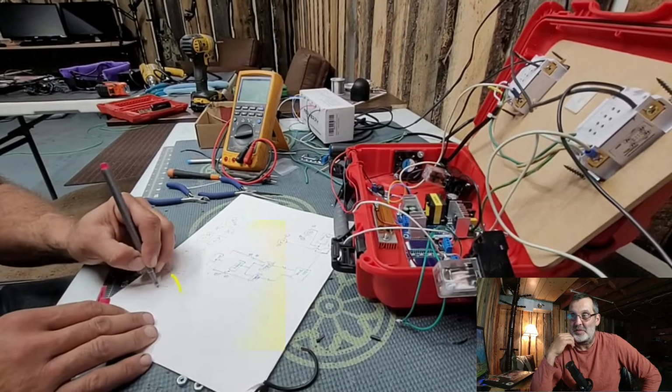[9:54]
Okay, and now I'm back to the drawing board. I still haven't figured out what the hell I did wrong over there. As you can see, this has been sped up quite a bit, so I sat there thinking hard for quite a while. This is why we do these things, right, guys? We go around, we train and we learn, and it just happens, right? Look at my puppy just spinning a million miles an hour. That's just to show you how much I was thinking hard.
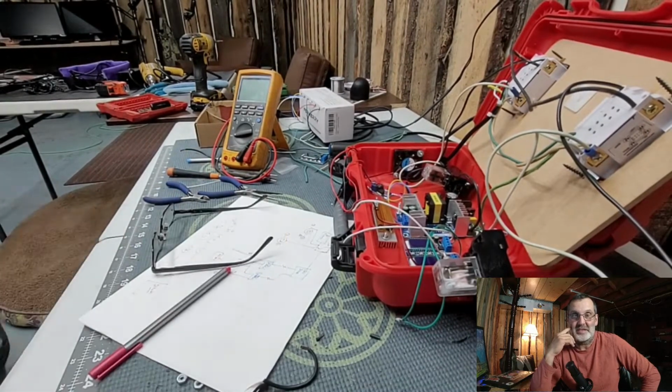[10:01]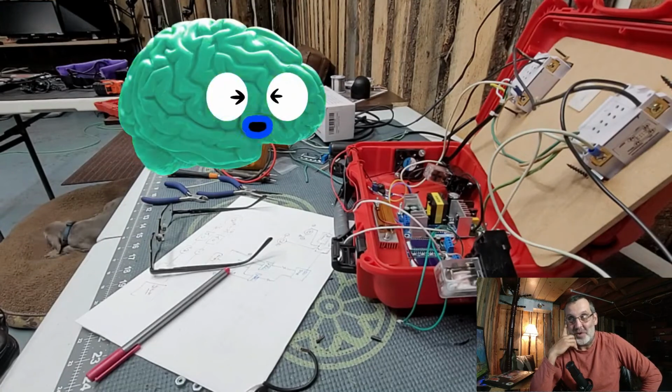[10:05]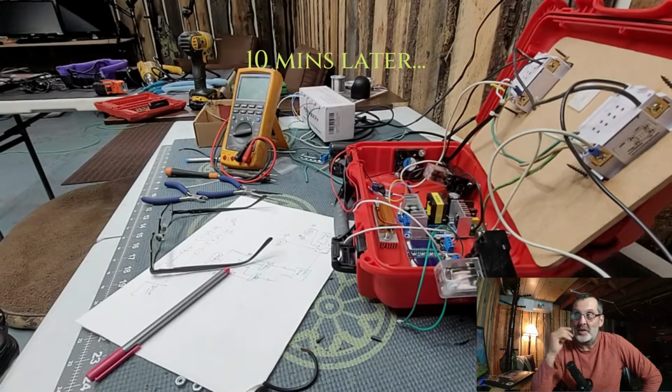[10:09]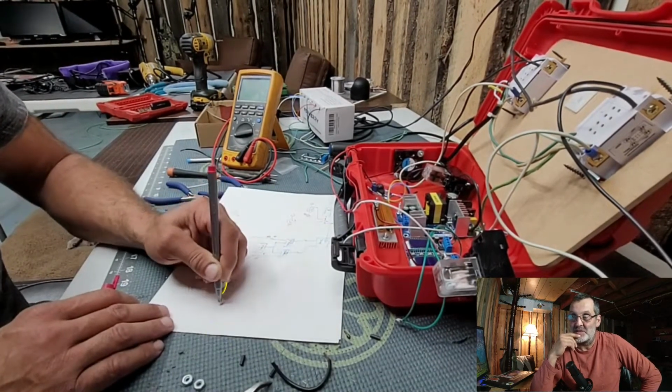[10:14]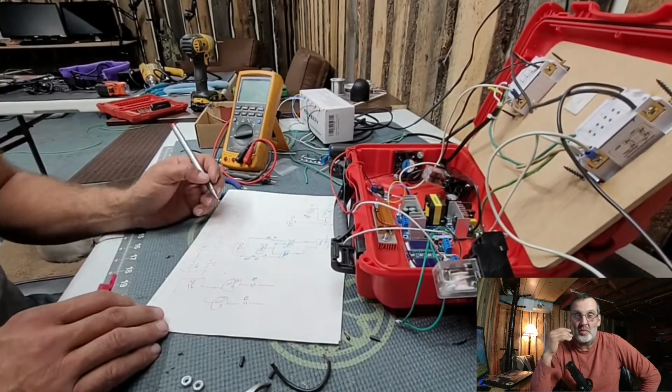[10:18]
So I decided to come up with a new design because I did not understand why it wouldn't work in the first place. So I'm doing this new design now, and my brain is about to explode and fry, obviously. And then I had a breakthrough, and I went nuts, and I just redesigned the whole thing from scratch. I didn't have to, but I made it simpler, more elegant anyway. And then I got a nice interlock between the two timers, so that when you push one, the other one doesn't come on.
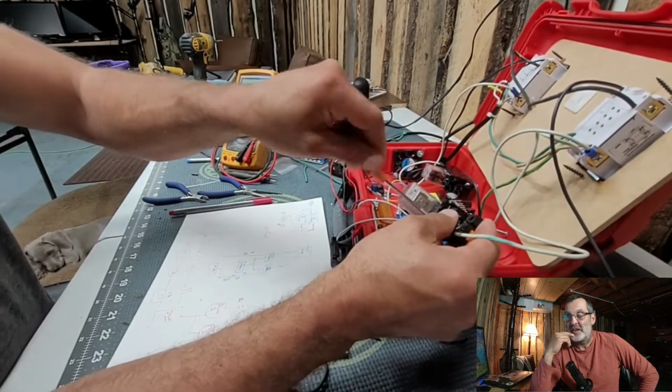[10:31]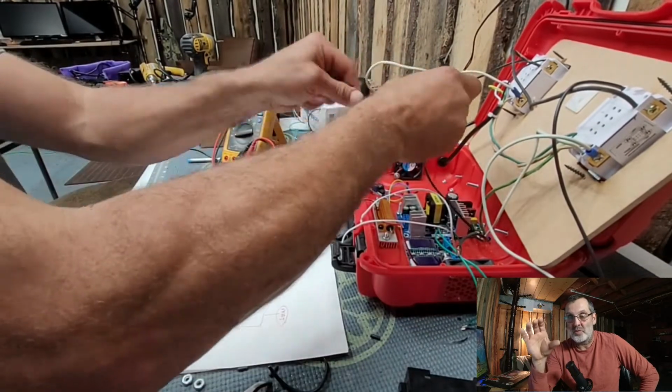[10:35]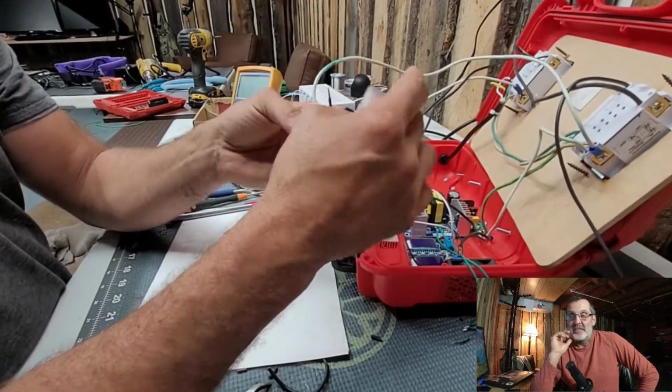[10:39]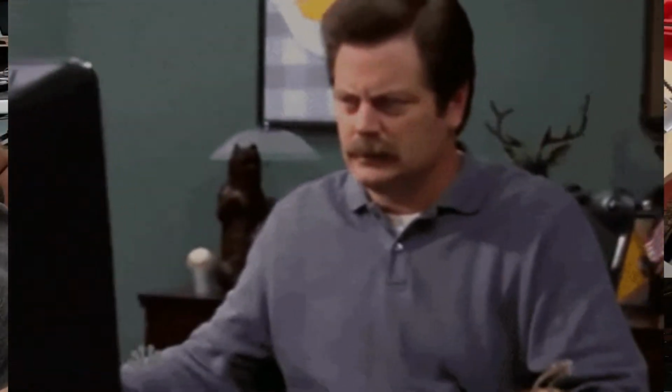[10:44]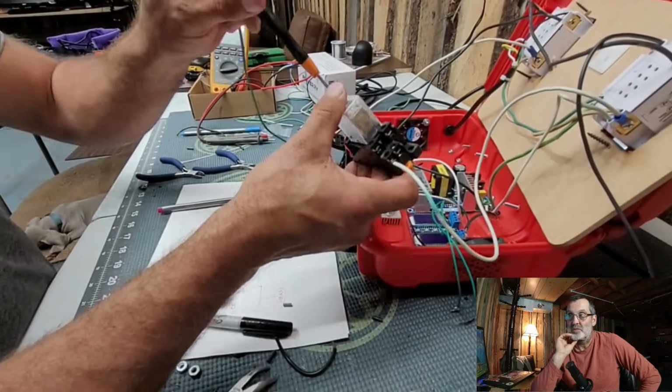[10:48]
Now, why I use two timers instead of just using one timer and the programmable PWM like we usually do. This is going to a good friend of mine. It's for his dad, and I'm pretty sure his dad is not exactly computer savvy, so we just like to make things as simple as possible.
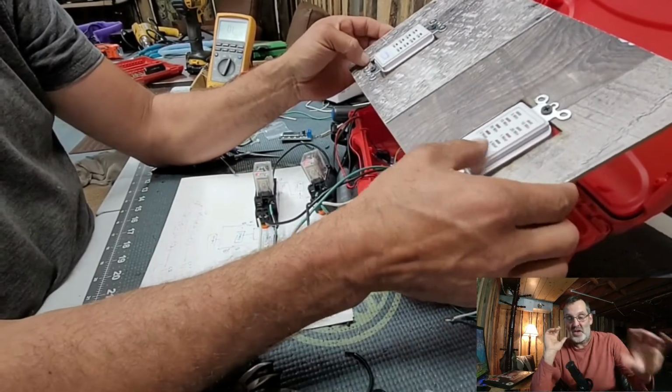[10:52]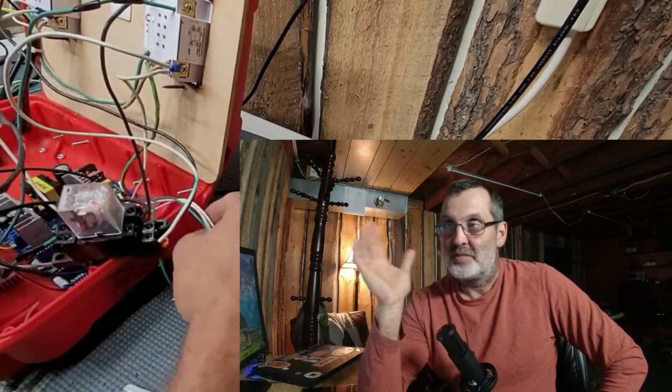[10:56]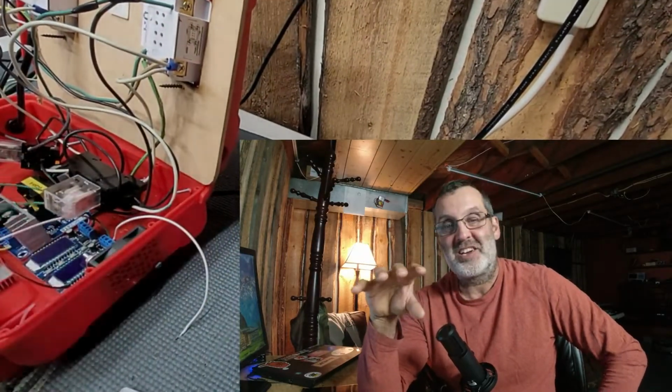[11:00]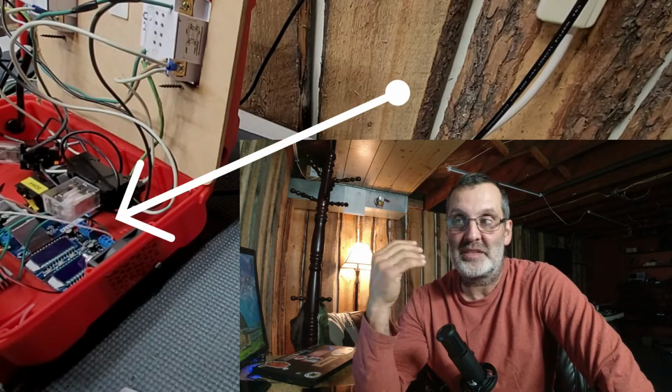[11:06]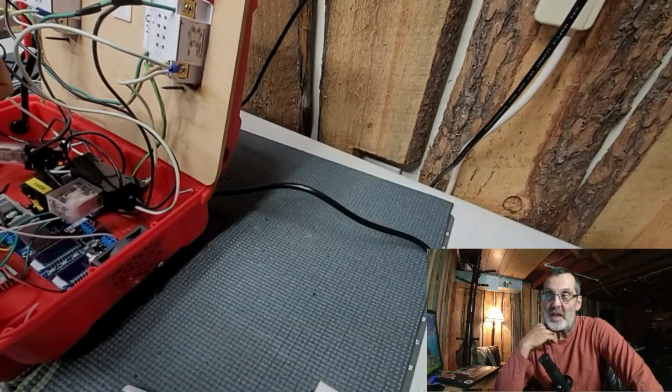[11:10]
So there'll be one timer in the morning, one timer in the evening, and that's the way he's going to use it. And every time you make things simple, the intricacies inside get really complicated. The simpler the thing is, the more options you have, the more complicated the build becomes. I didn't fix my mistake there. As you can see, I was pointing out the arrow.
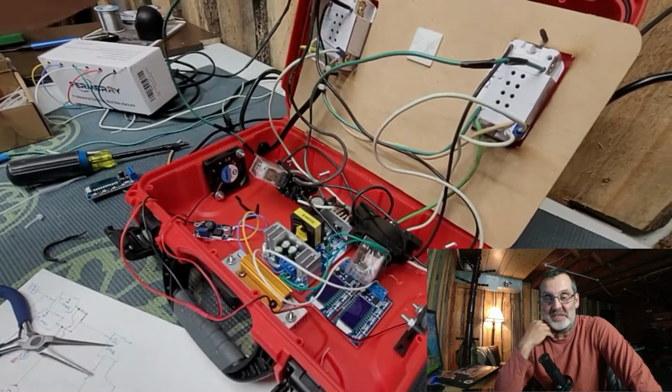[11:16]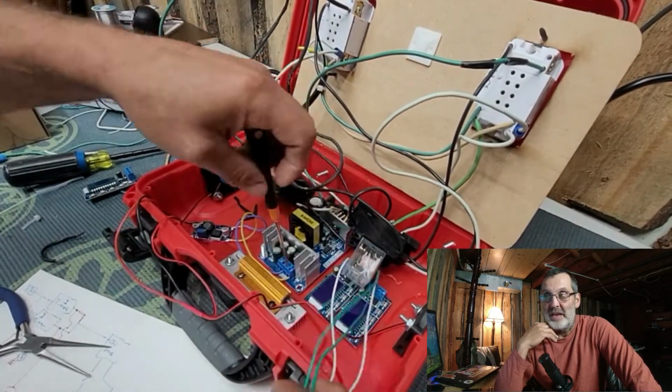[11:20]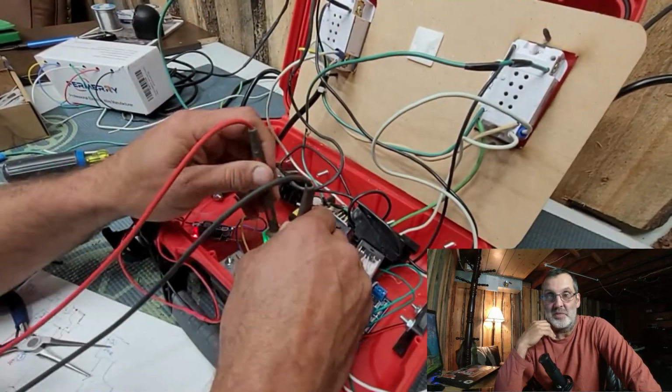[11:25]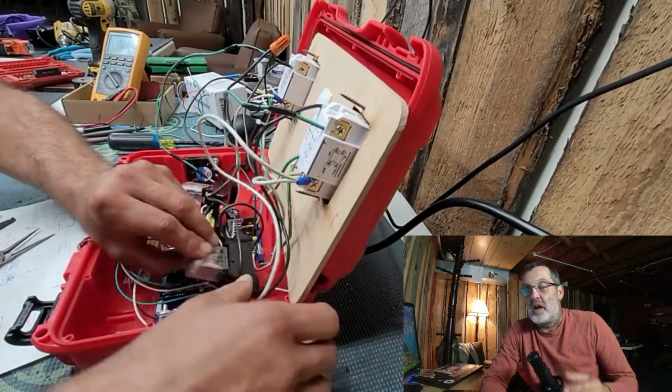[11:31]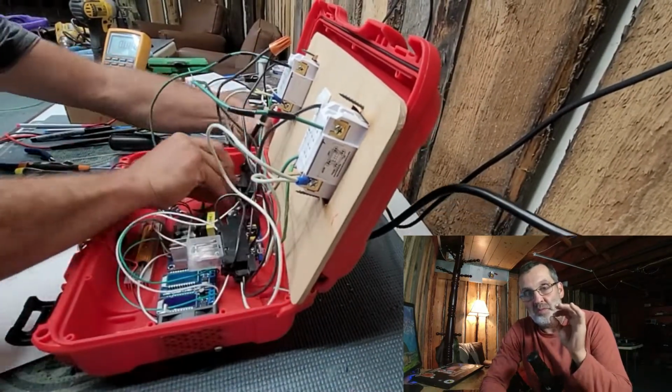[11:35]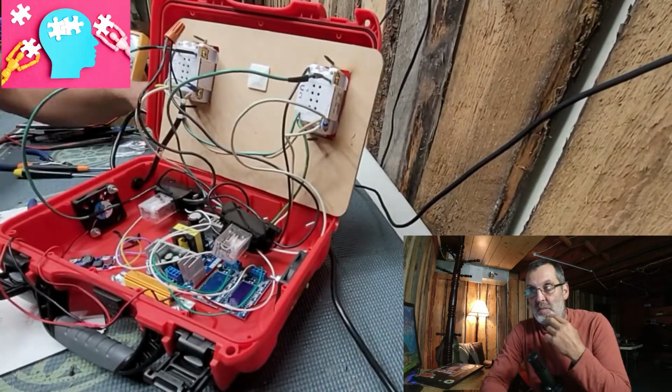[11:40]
Everything was working fine beside the dead short that I was having, which ended up burning one of the PWMs. I had to replace both of them because they just couldn't take the PWM anymore. So while we watch me struggling there trying to figure out why nothing works, I want to share this with you. PEMF has been proven many times over to increase memory. We talked about that. You know what that means?
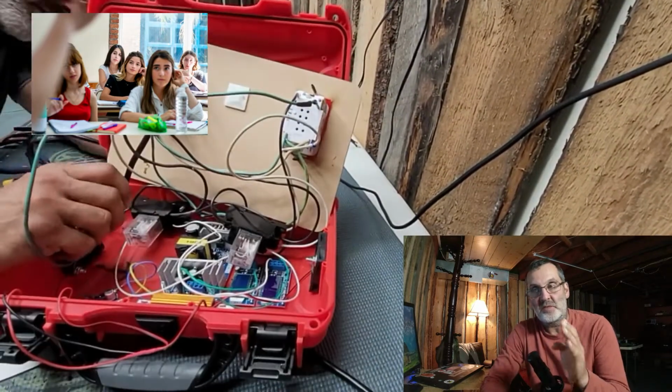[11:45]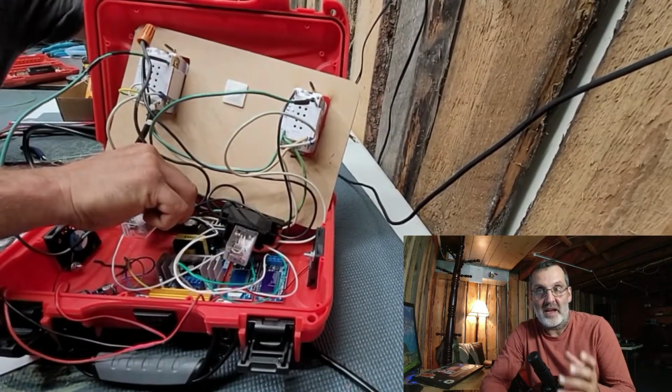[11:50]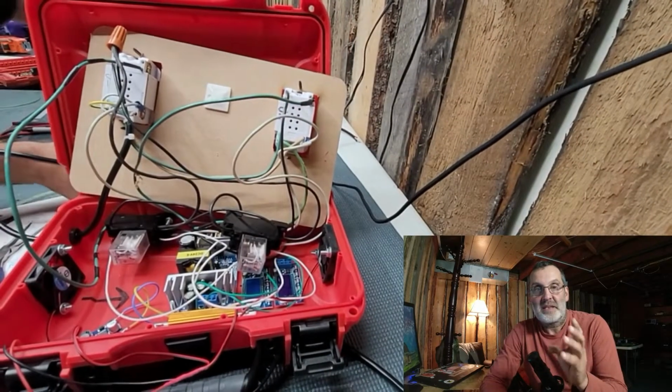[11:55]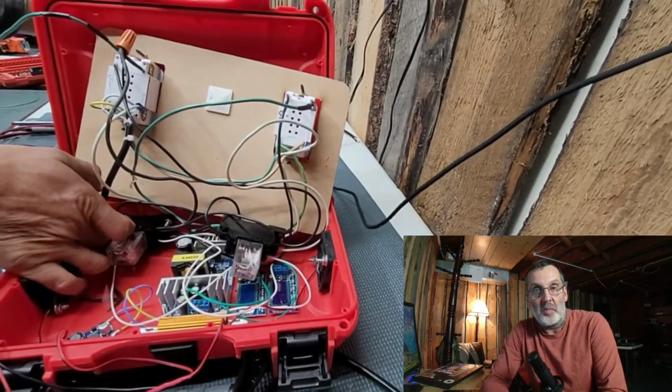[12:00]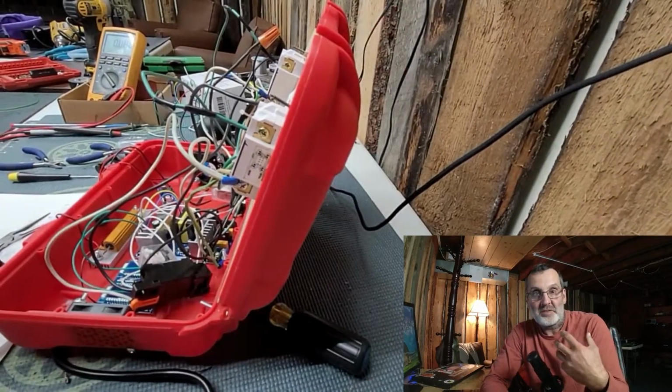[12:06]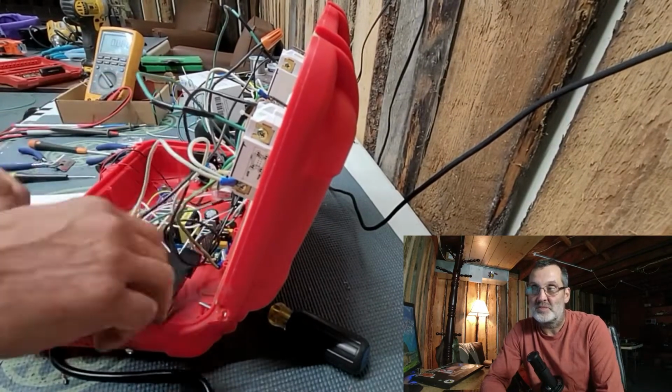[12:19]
That means those kids with ADHD, attention deficit syndrome, or the kids nowadays that are just on YouTube and TikTok all the time that have the attention span of a dead gnat. Basically, if we build a nice PEMF for them, it's going to help them study. It's going to help them focus. Hell, it's going to help us do all that. I've found over the years that it's helped me quite a bit. I have more stamina in the brain, which is amazing. And I'm talking with my psychologist about this stuff, and she's really interested, and we're planning on doing some stuff together on that.
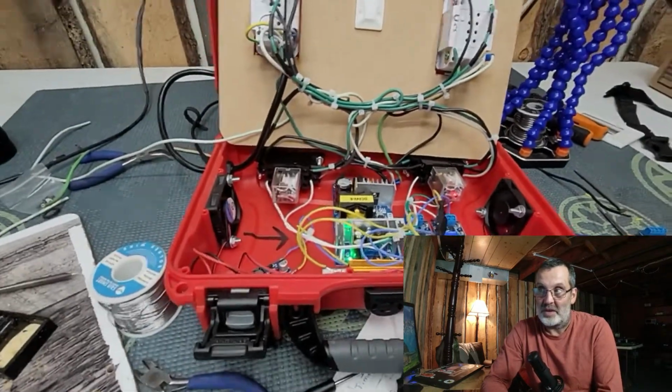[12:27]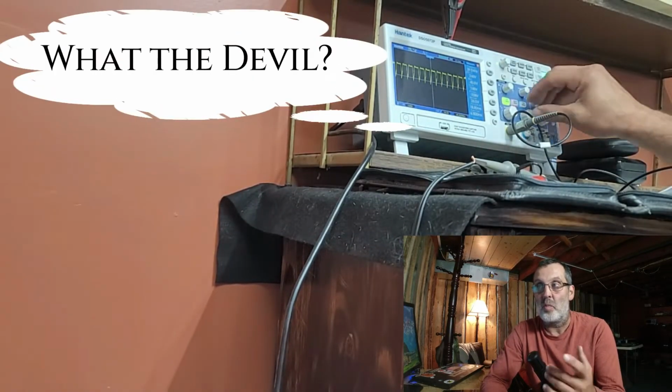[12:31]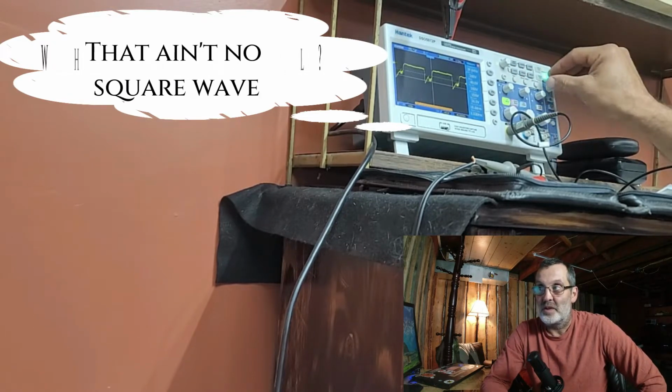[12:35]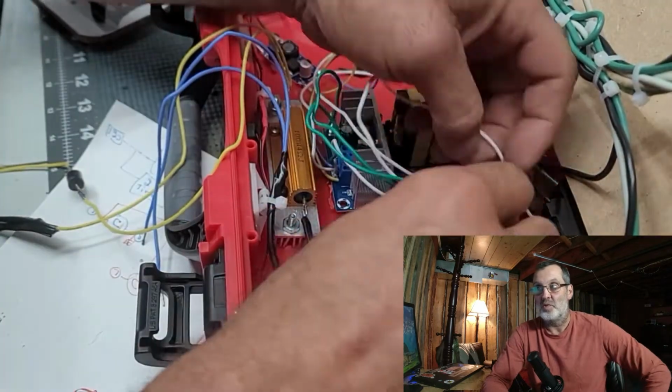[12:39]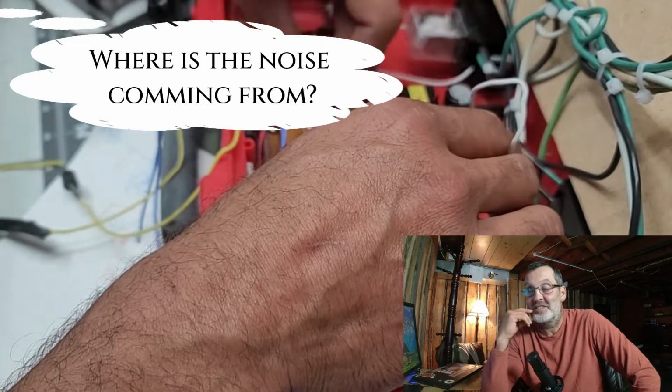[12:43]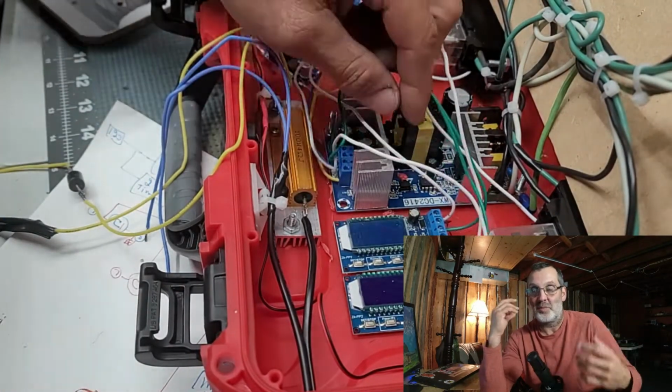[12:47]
Get back to the build. You can see I'm going nuts with wiring, rewiring, and playing around. And I finally found the mistake, and then I plugged it in, and what the devil did I get? That was no square wave. It was one kind of atrocity from hell. I was like, oh no, where's the noise coming from? Seriously, I finally found out my stupid mistake. Now I'm back into the magical pixies of electronics.
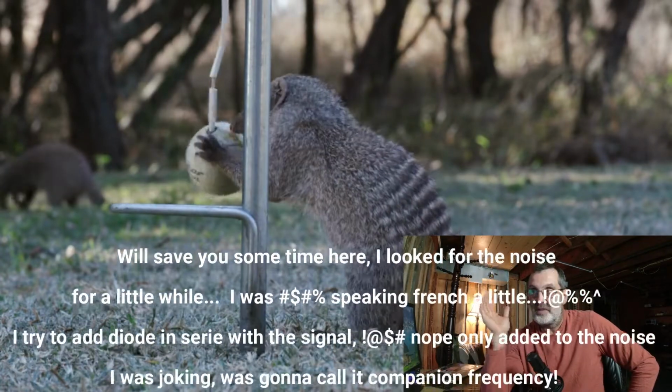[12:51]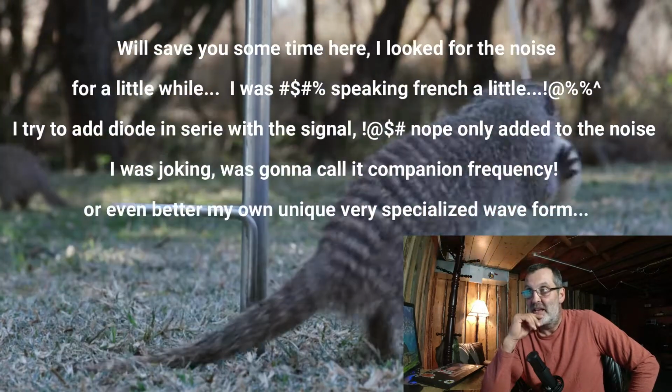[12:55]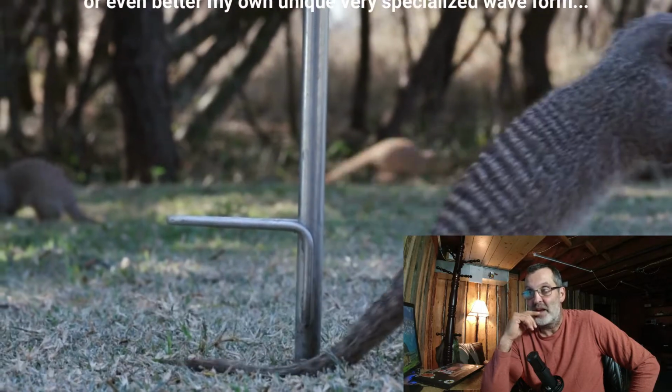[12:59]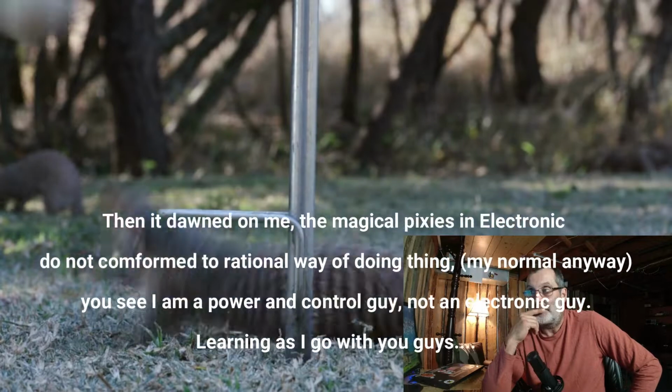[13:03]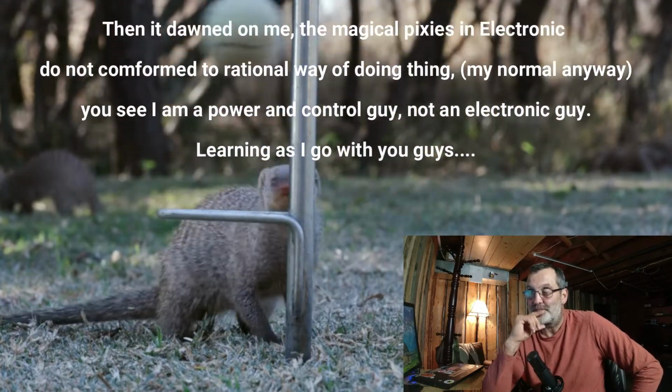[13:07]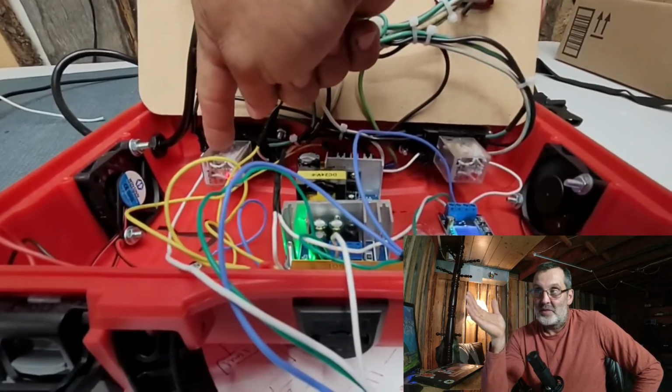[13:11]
I'll save you some time. I looked for the noise for a little while. I was speaking French quite a bit. I had a diode, but that didn't work at all. By design, I'm an electrician. The magical pixies of electronics is really not my forte. I found out what the issue was. I'll show you guys in the drawing.
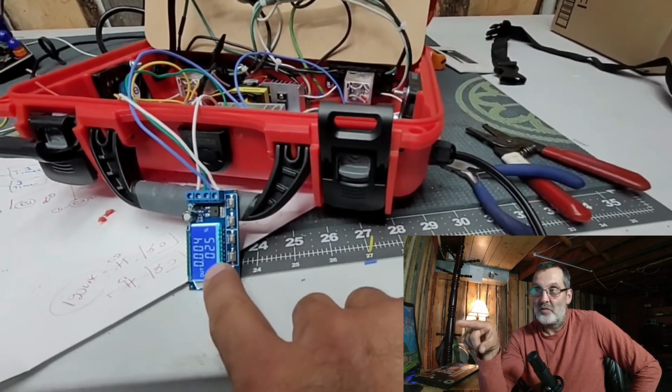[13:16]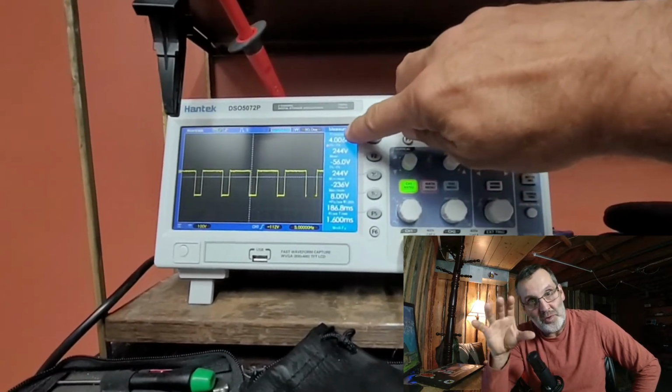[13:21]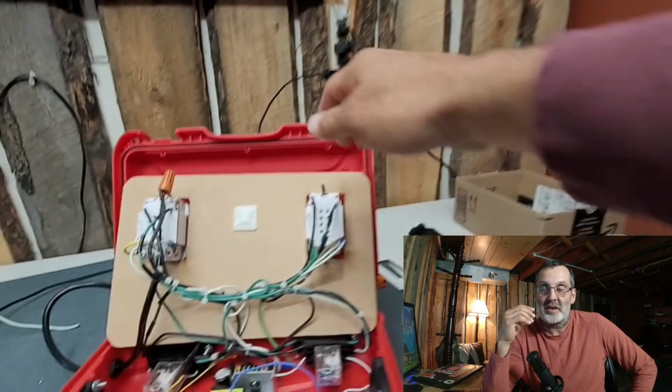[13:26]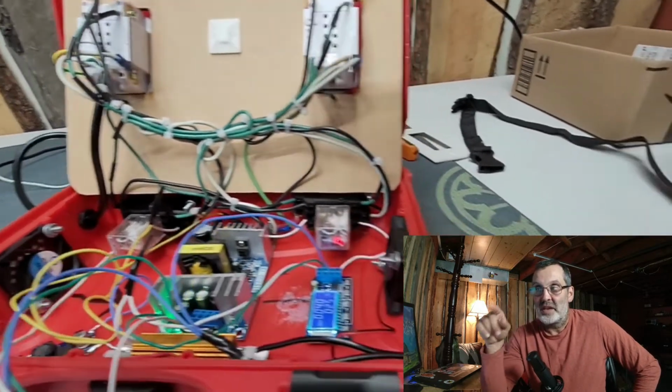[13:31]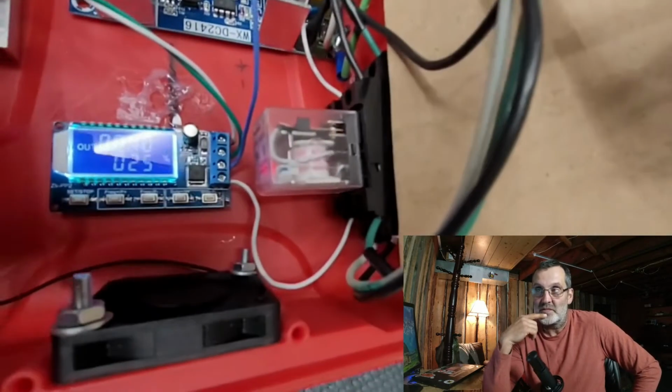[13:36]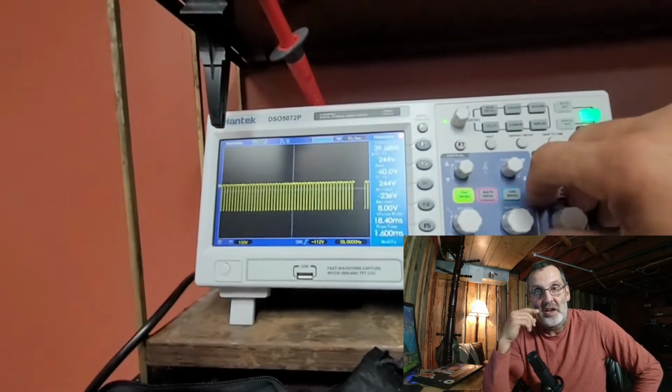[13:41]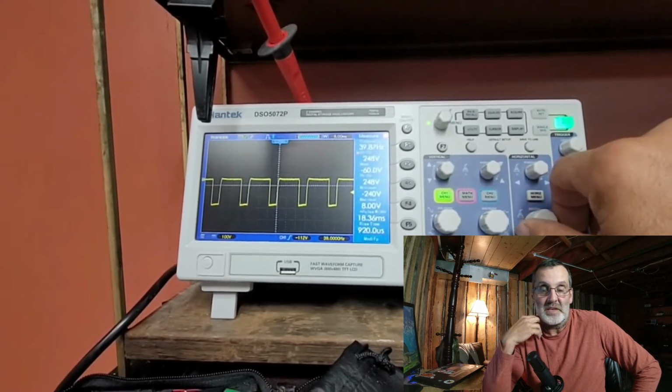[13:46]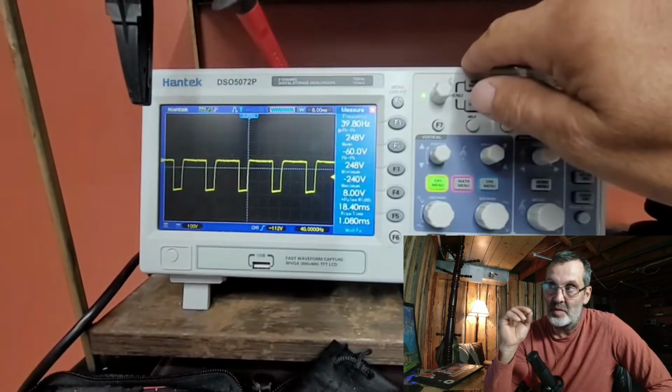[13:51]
But here we are, 4 hertz. Look at that beautiful, beautiful square wave. This is what you want. Nice and clean. No background noises, no accompanying frequency. And now we're making the other PWM kick in, and we're at 40 hertz. This one will be the morning one, right? This is the one that's going to energize the brain. I'm going to zoom in a little bit so we can see it clearly. And look at that beautiful square wave once again. On, off, on, off. This is exactly what we want. Square wave is king, remember that.
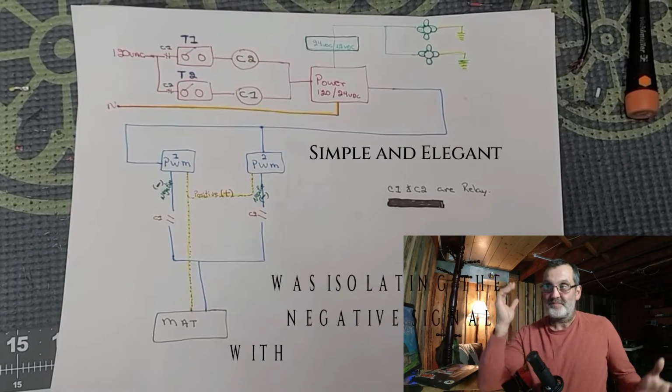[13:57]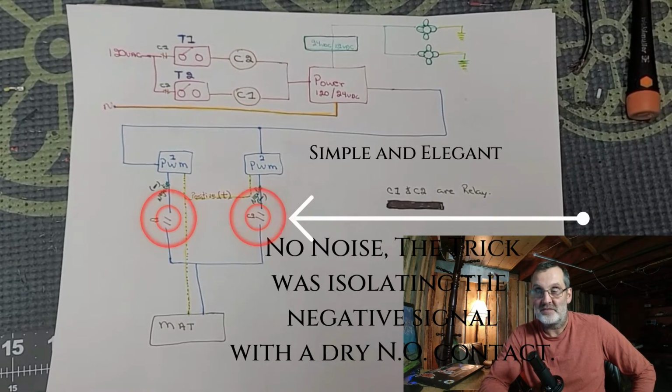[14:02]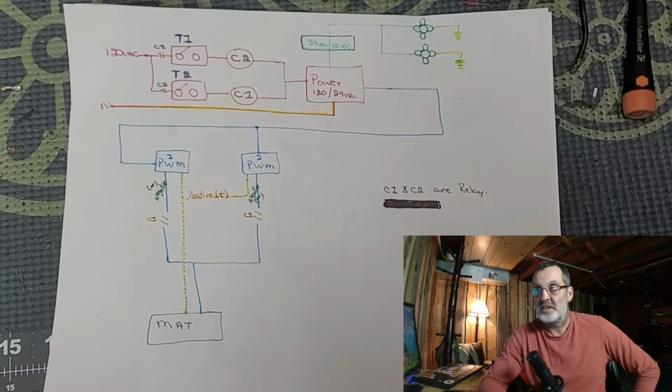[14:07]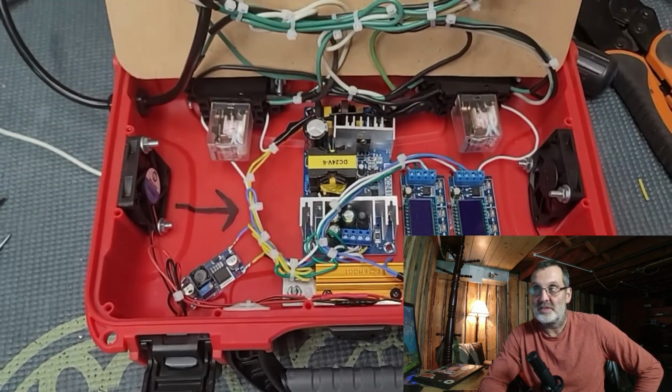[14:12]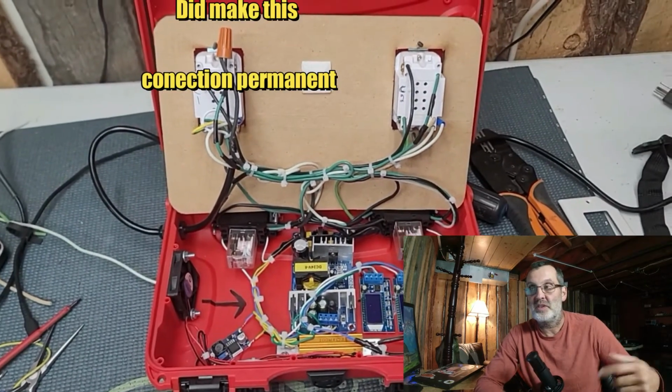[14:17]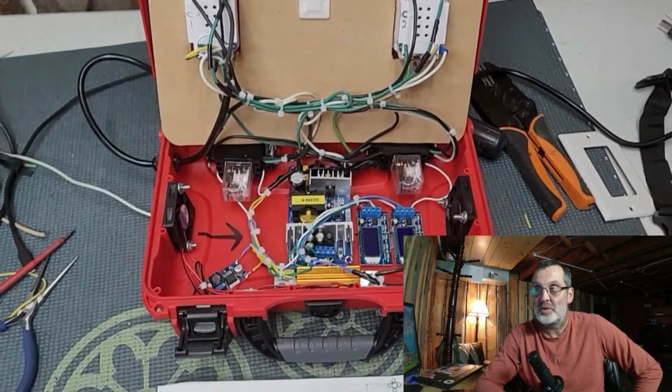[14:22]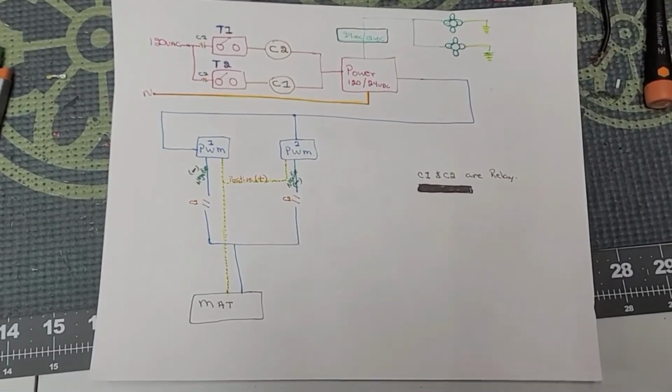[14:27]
Now, the magic was to isolate the negative side of the PWM, not the positive side, on my dry set of contacts. This drawing, you can pause it here, make a screenshot. It's all you need to wire this. If you understand this, you'll have no problem doing it. If you don't, you can ask us. We can help you out. Email's in the description. Yes, I did fix that. That was just for testing purposes. I made that permanent. The fans are blowing cold air. Everything is there. The drawing is there. Everything is working.
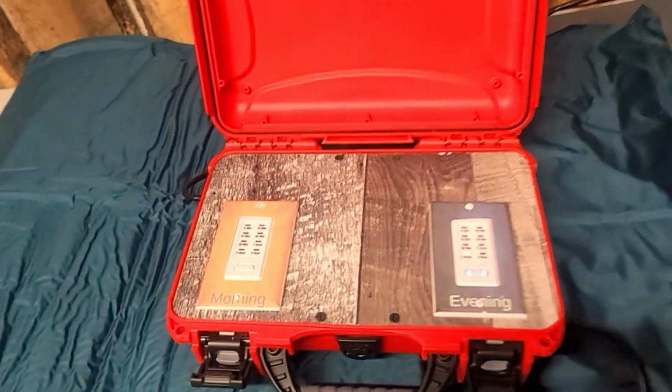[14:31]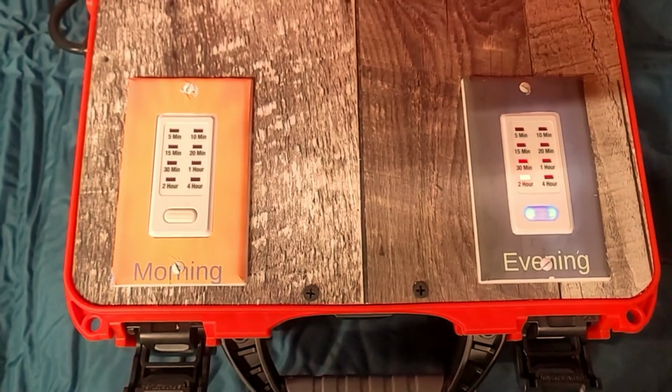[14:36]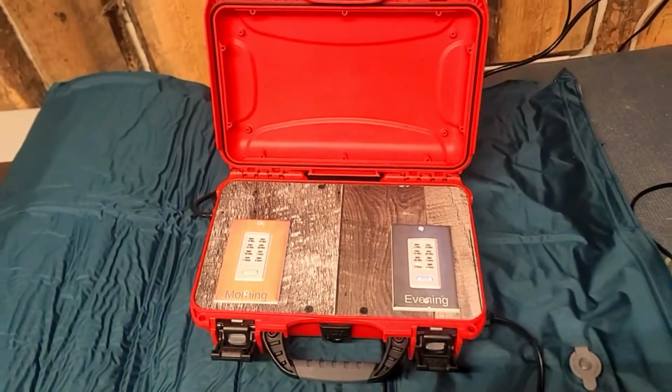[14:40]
Morning timer: come on and energize your brain. And then the evening one is to relax you to have a good night's sleep. Sleeping good is very, very important. Okay, here we go. Done. It was not an easy build, but it was not complicated either when I sat down and actually thought about it and fixed my mistakes.
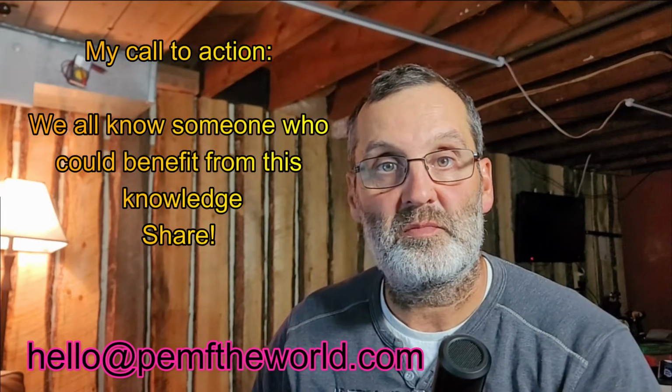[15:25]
If you guys want to build something like that, that drawing right there doesn't show all the wiring involved, but all the major parts are there. And if you're willing to tackle something like that, I'm sure you know enough to get around it. And if you do want something like this, just send us an email. As usual, I'm going to put all the parts in the description for that project, and the email to contact us is going to be there too, so you can just give us a shout and we'll go from there.
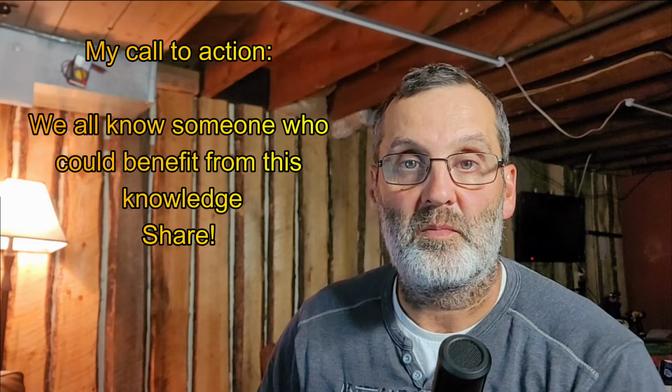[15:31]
I am very happy with the outcome of that project. It's going to help a good friend of mine, and it's going to help his dad, and I can't wait to hear back from it, and I'll keep you guys posted.
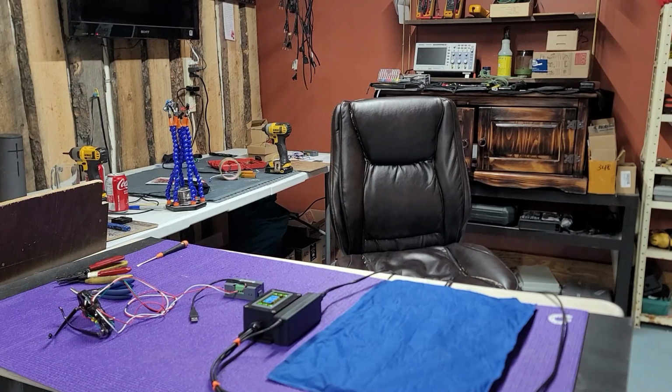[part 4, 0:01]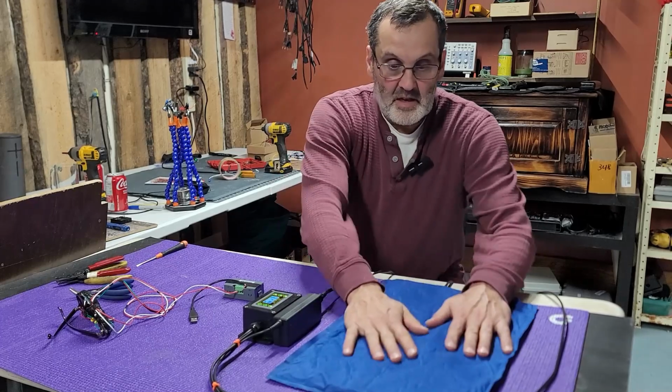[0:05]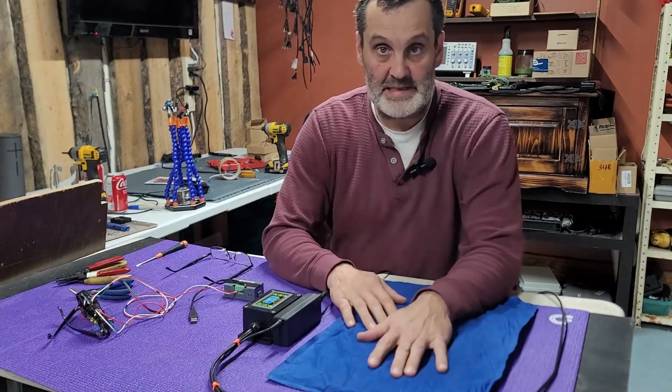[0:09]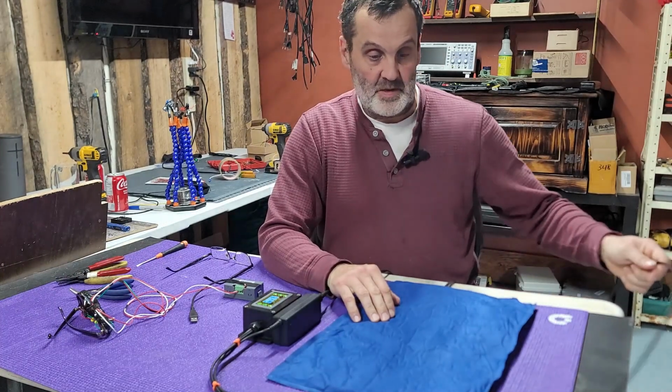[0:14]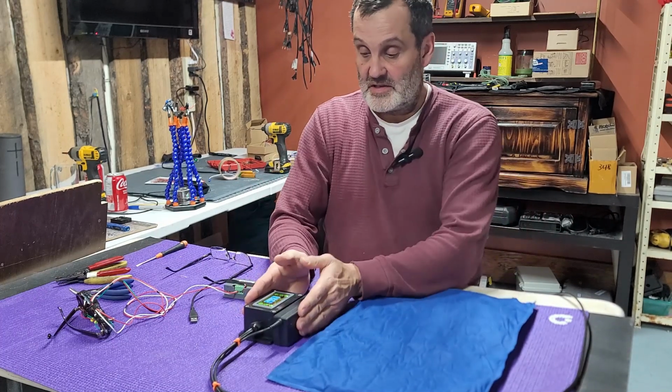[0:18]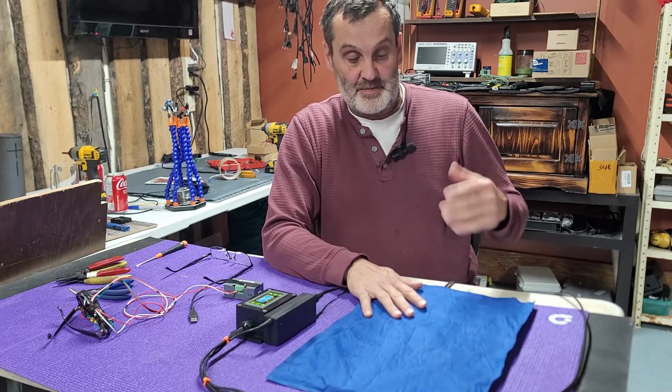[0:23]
Just a quick video to talk about what I did here. So, I'm pretty sure I got COVID. My lungs were having a hard time, like a lot of coughing and stuff like that. So I decided to make myself a chest mat. There's 6 rings in there.
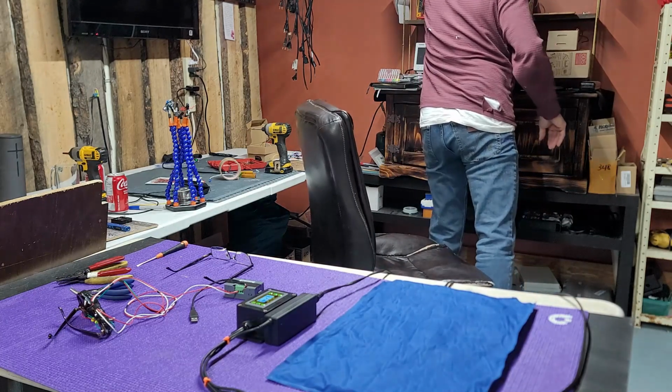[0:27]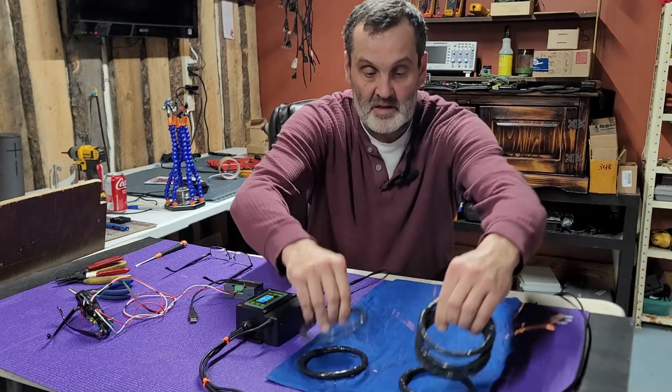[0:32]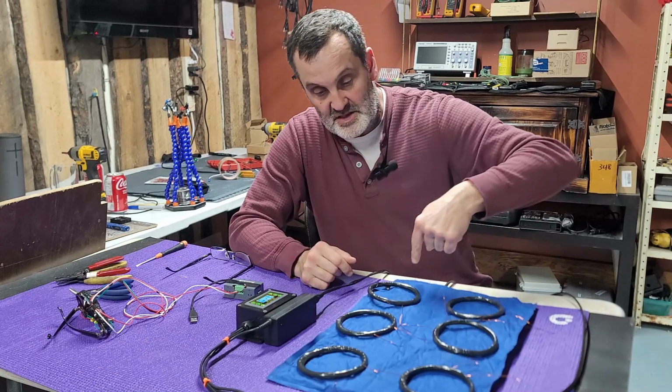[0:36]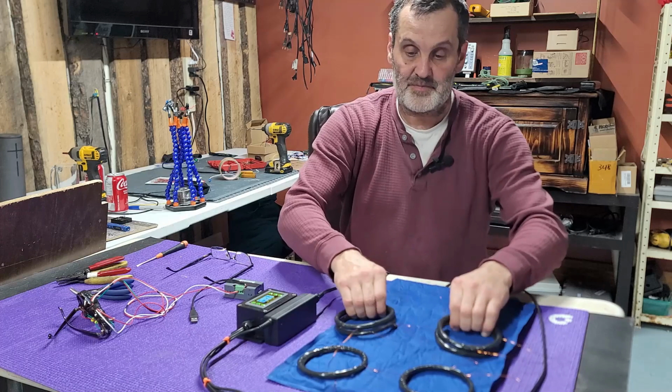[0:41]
So these guys are in series, these guys are in series, and I parallel them back up, and then they come out over here.
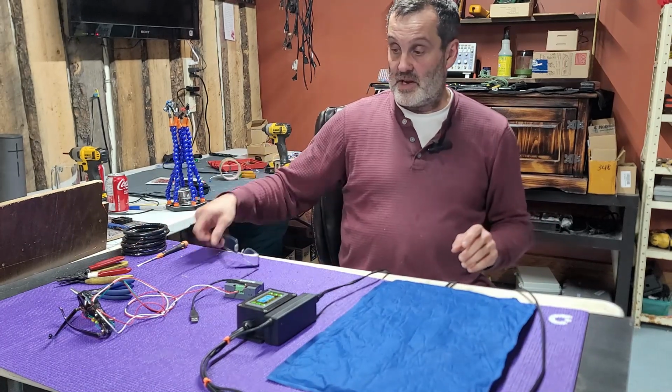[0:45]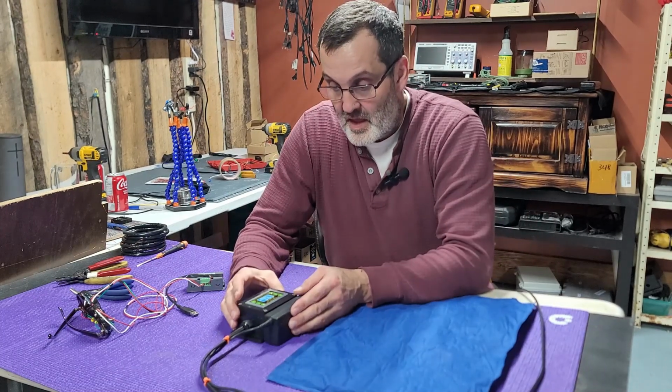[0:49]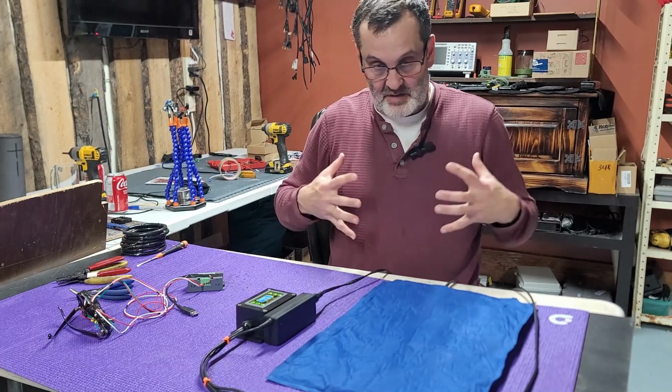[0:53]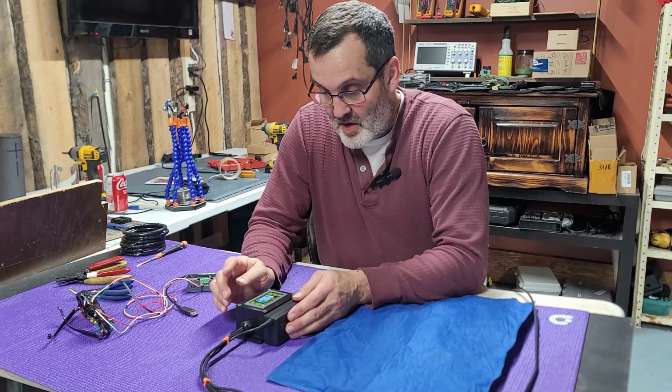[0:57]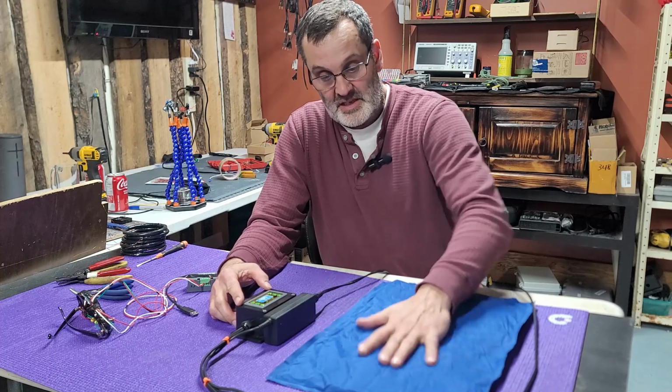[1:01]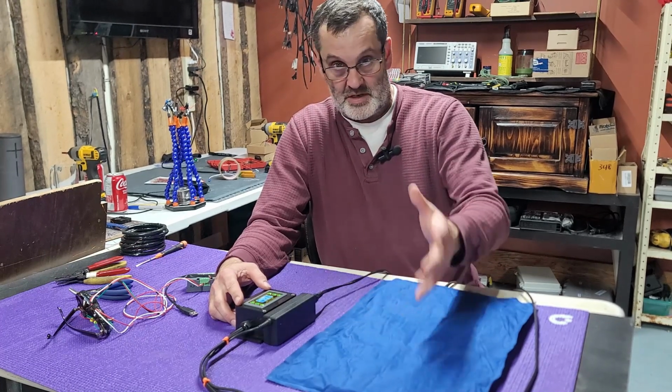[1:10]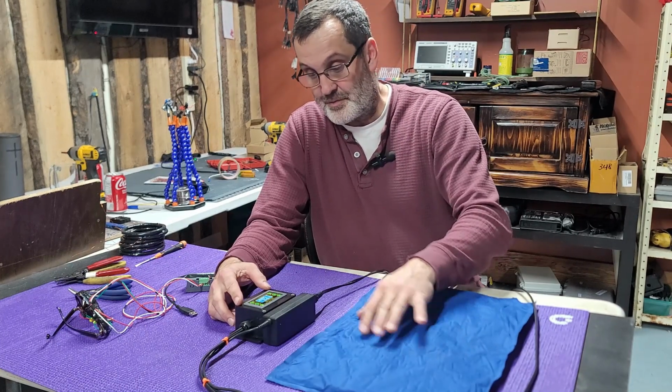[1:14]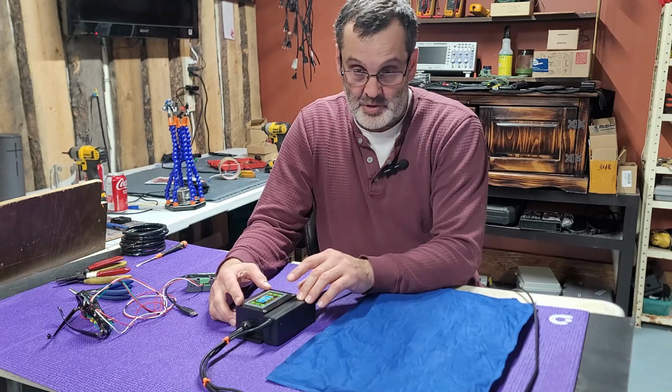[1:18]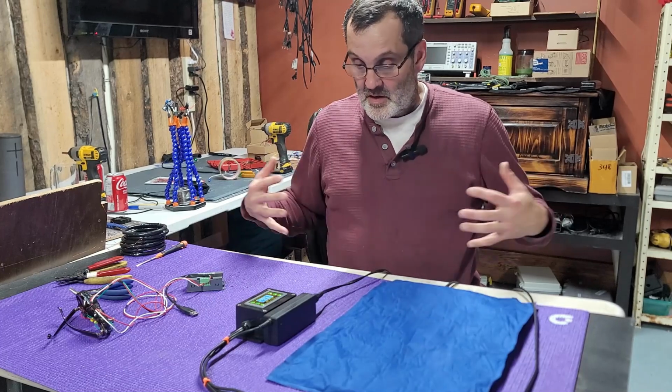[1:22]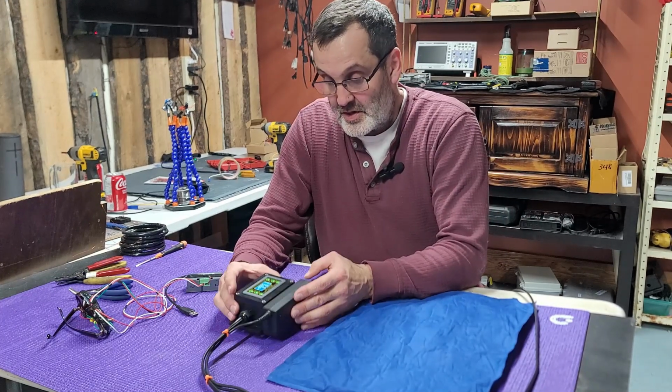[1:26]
I learned something quite interesting today. Remember I was telling you guys I used to get like that chest thing, like a panic attack, with my super PEMF. I found out I was getting the same thing with this. It was just like too much, because this is quite powerful compared to the typical gauss that I usually like to be exposed to. So I lowered the duty cycle down to like 5%, and then all that chest constriction went away. So the duty cycle is really cool.
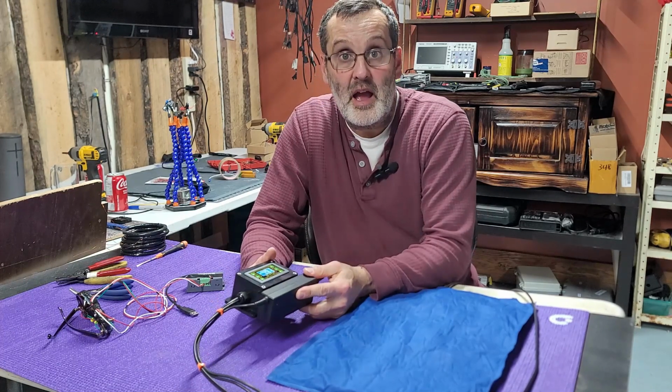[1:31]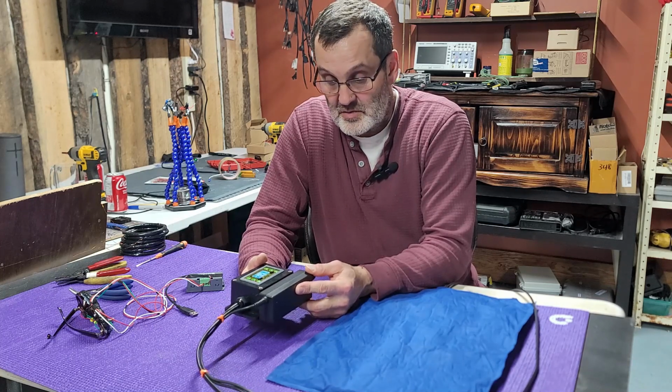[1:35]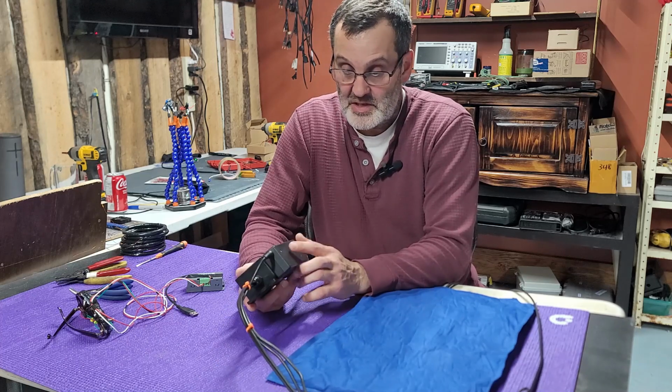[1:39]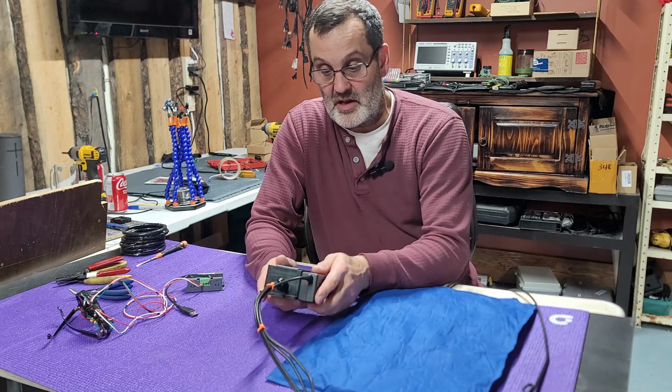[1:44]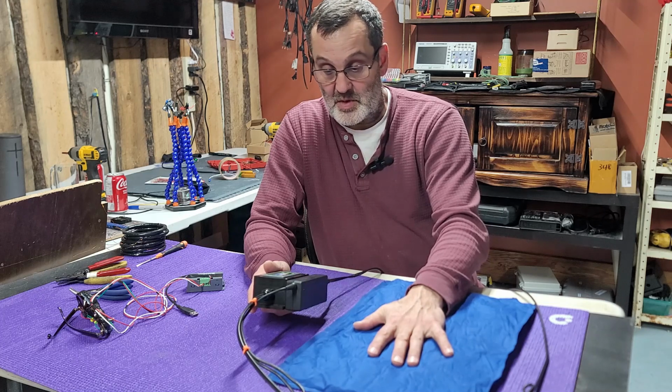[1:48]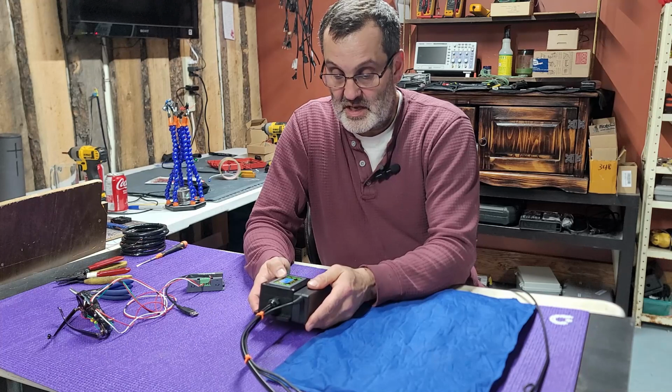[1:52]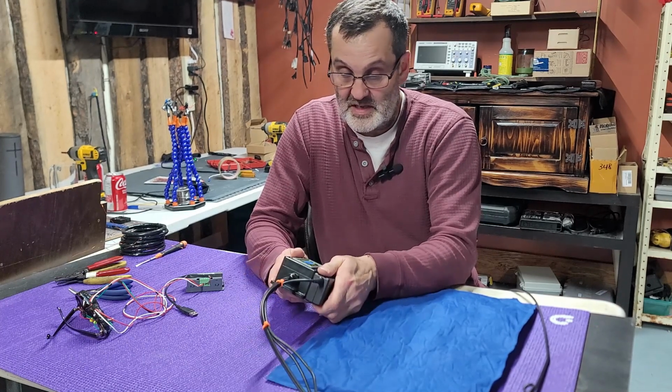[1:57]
So there's a computer power supply. I found this, by the way, at the transfer station in our town. I was just over there looking and I found this. I brought it home and it's got 19.5 volts. It's really small, only 3.5 amps, so it doesn't have a lot of amperage. I don't know how long it's going to last because it's running at 100% basically. It's giving everything it's got. But if I keep the duty cycle low, hopefully it gives it time to cool off in between. If I feel it getting hot, then we'll worry about it.
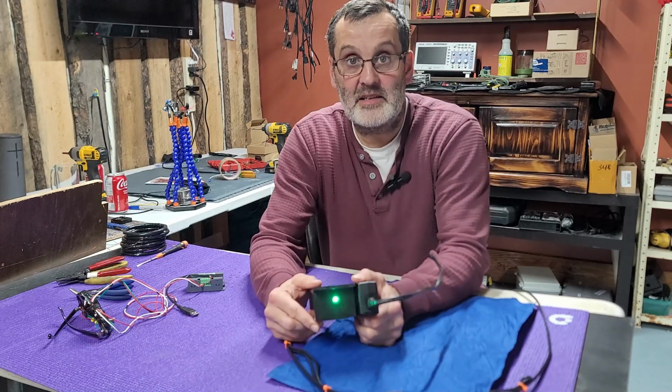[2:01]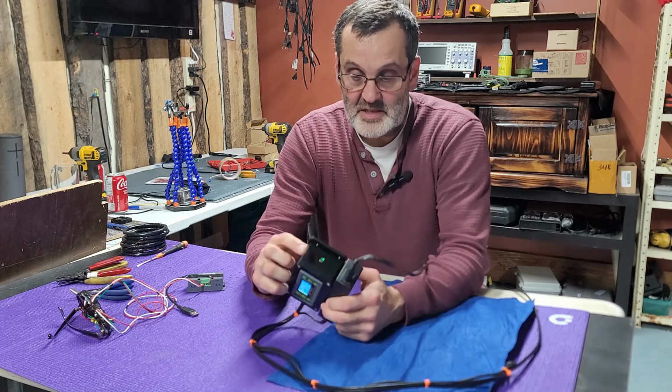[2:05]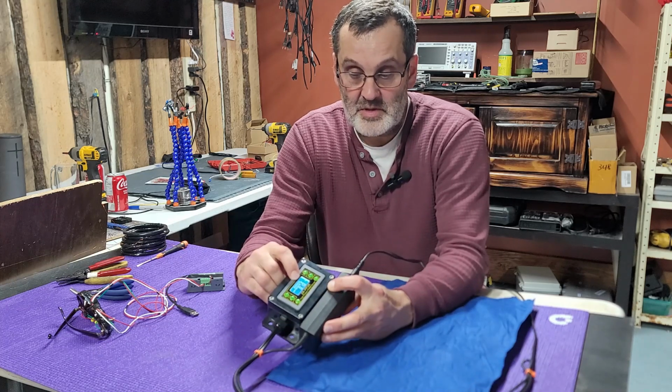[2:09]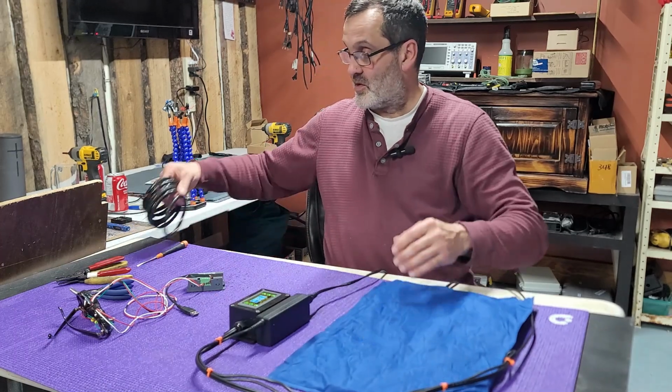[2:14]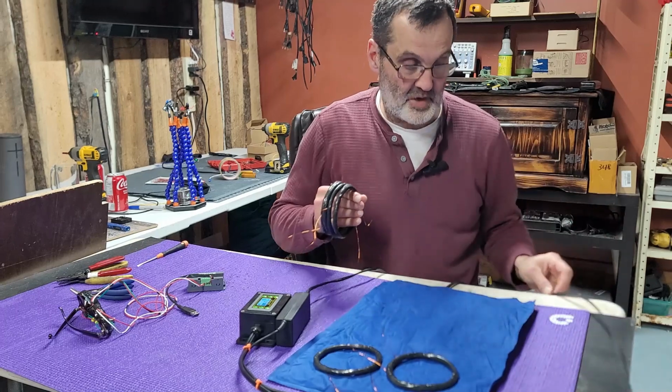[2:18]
And I added a status LED. Now, I don't like this because all this status LED is telling me is that the PWM is working. It's not telling me that the coils are working. So I thought about this too late. I'm gonna make another one. I'm not gonna modify this one because everything is taped inside.
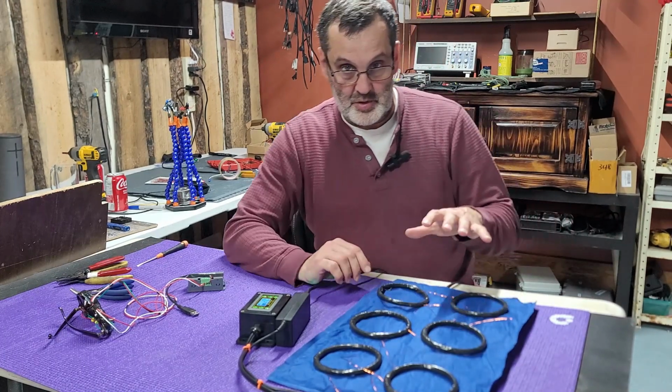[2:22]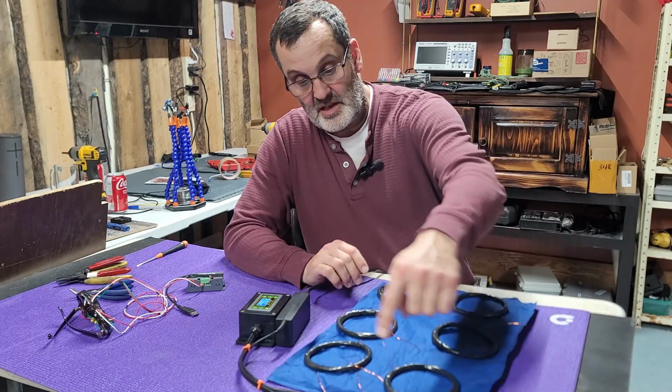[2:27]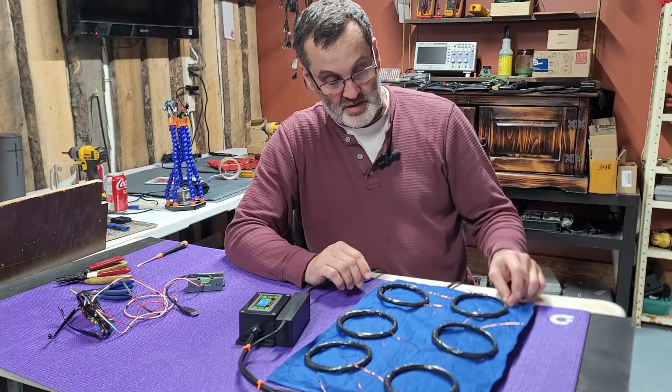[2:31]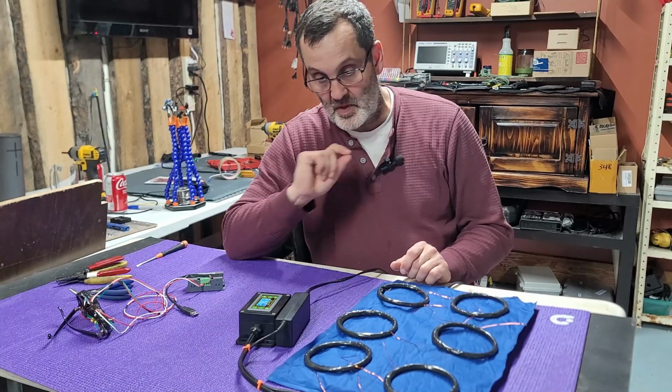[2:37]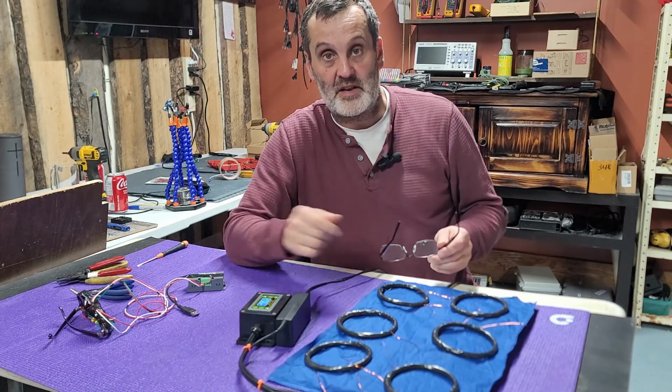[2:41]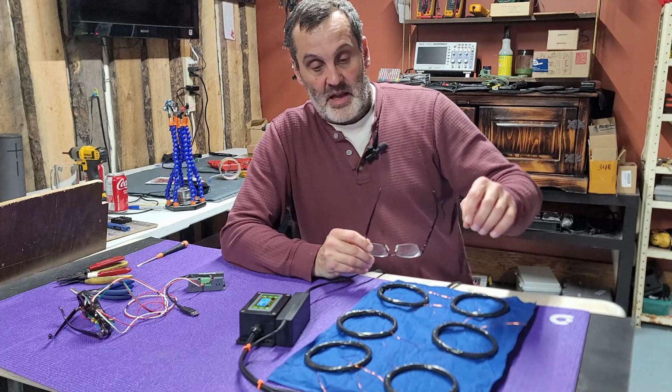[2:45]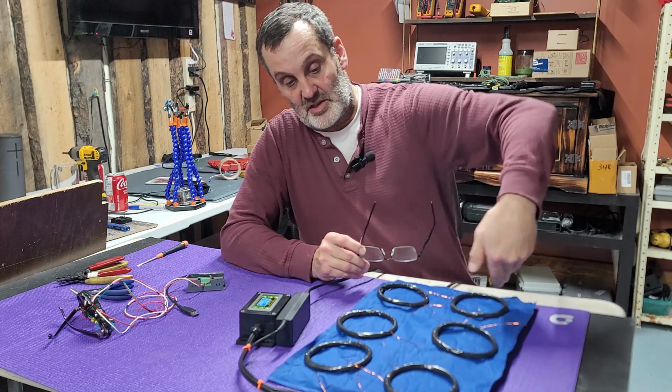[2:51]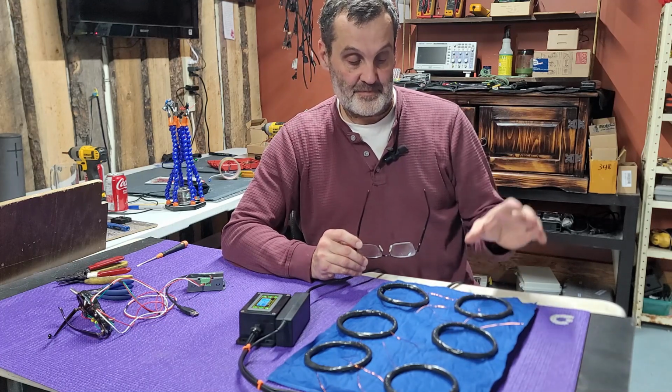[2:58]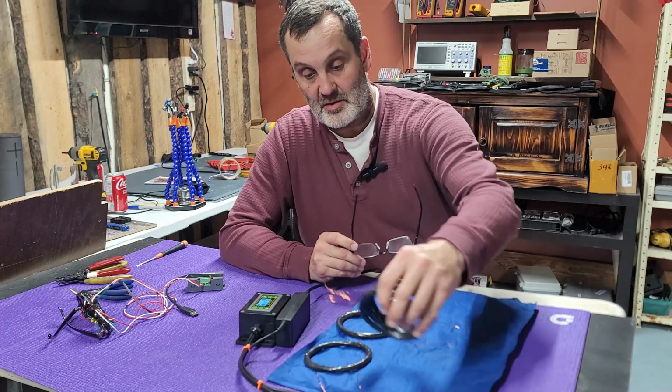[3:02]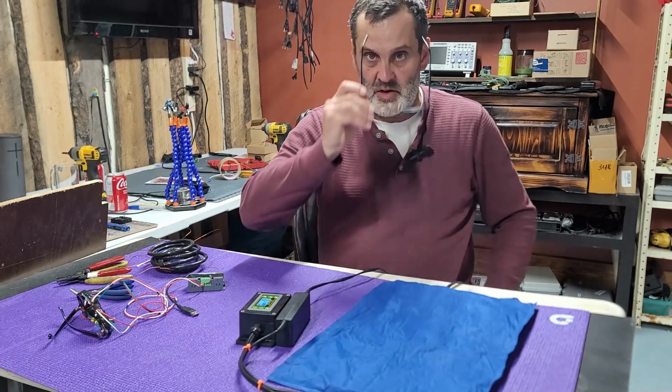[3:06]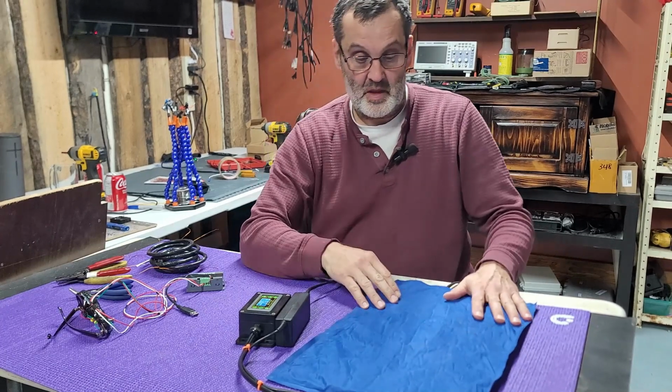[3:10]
So when I put the rings up there, and you've got a series this way and a series that way, I'm gonna put 2 LEDs, one on this series and one on that series. Those LEDs don't have enough amperage; you cannot flow that kind of amperage through them. That would be awesome if I could, but I can't. So I'm just gonna take one leg off of one and parallel them with this. As long as there's flow in there to go back to ground, it'll be fine. Same thing on the other side. And as long as both LEDs are flashing, we're monitoring the coil. I'm gonna play with that, and if I can figure out an easy way to do it, I'll put that in the video and we'll talk about that.
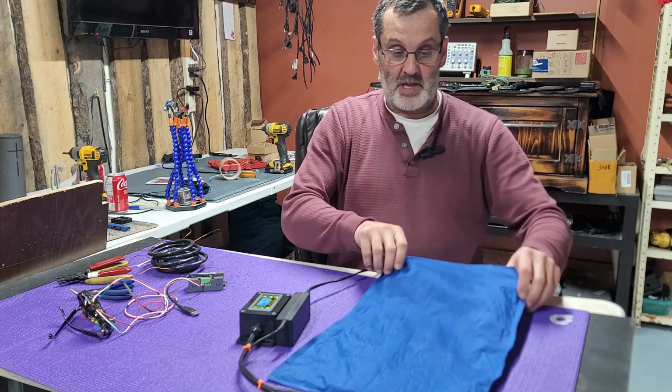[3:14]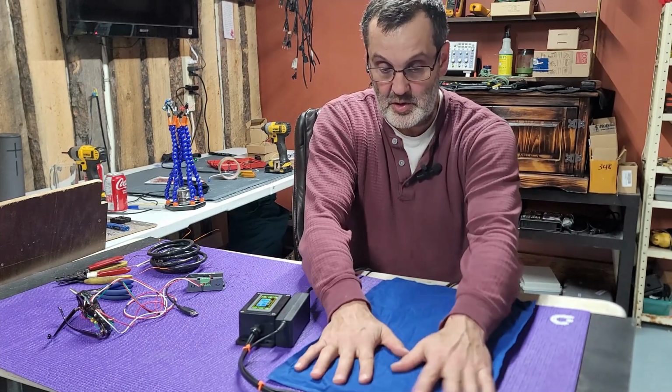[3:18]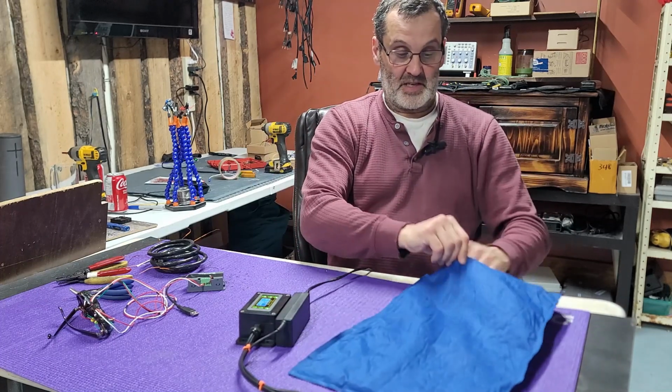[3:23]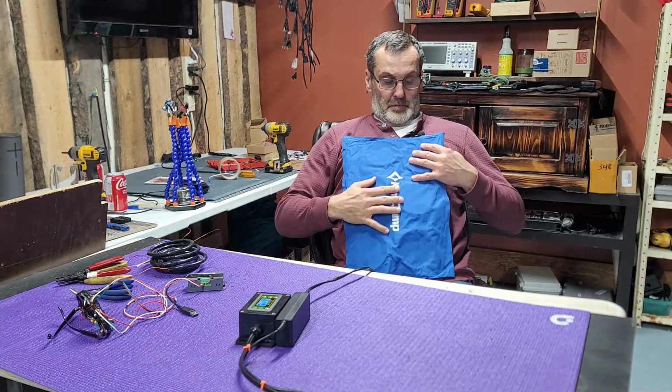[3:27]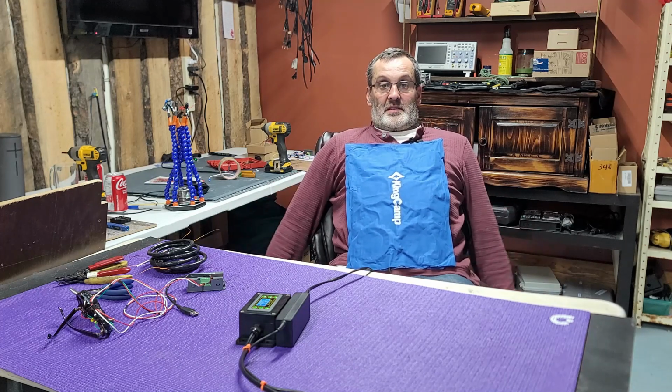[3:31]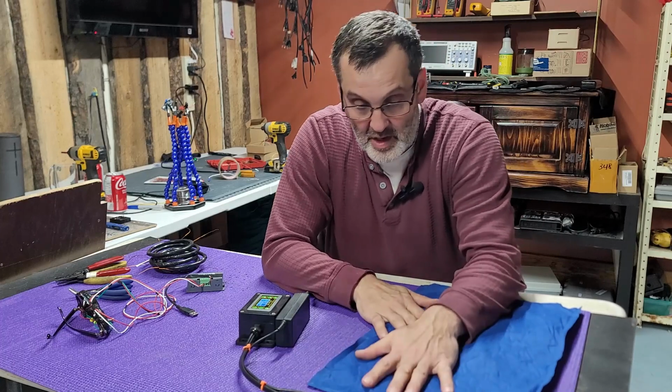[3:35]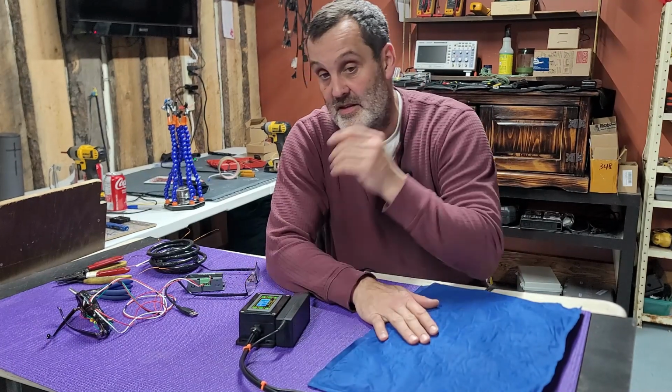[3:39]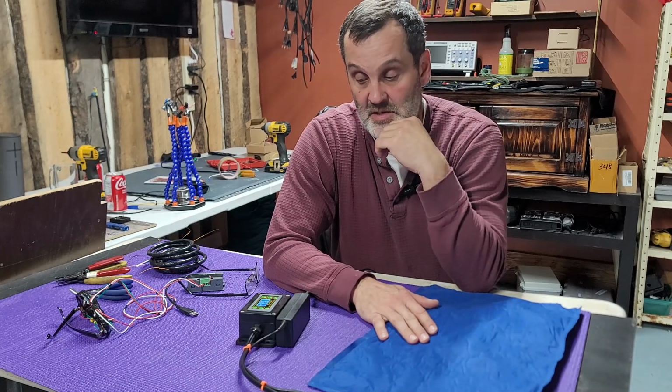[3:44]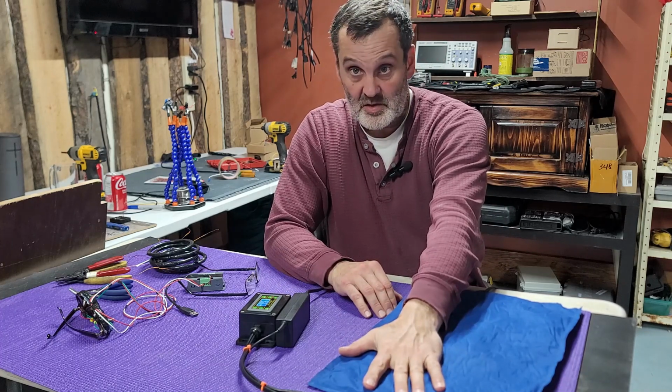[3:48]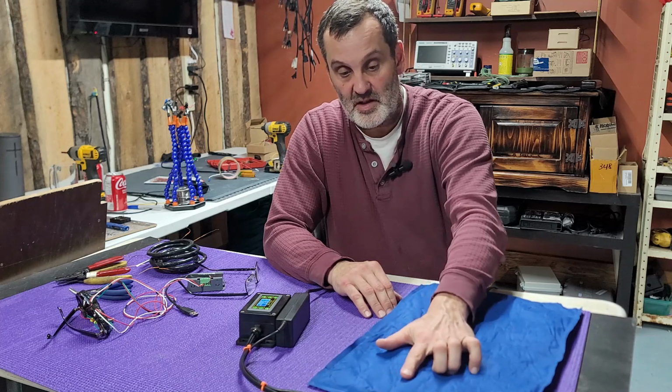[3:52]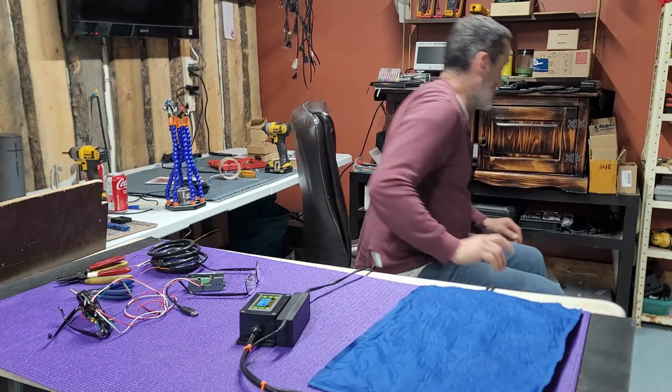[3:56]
So this is a pillowcase for a camping mat. I really like it. It's really cool, as you can see. I'm going to put double-sided tape on the front and then keep it like that. But look at the perfect size that it is. It'll be perfect for this. I read a bunch of research papers on the topic, and they had tremendous success with this. If you guys are wondering how much gauss is going through there, right now it's about 30 gauss per coil, dead center.
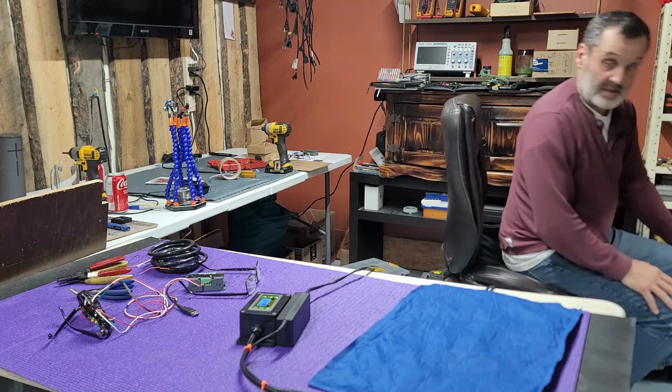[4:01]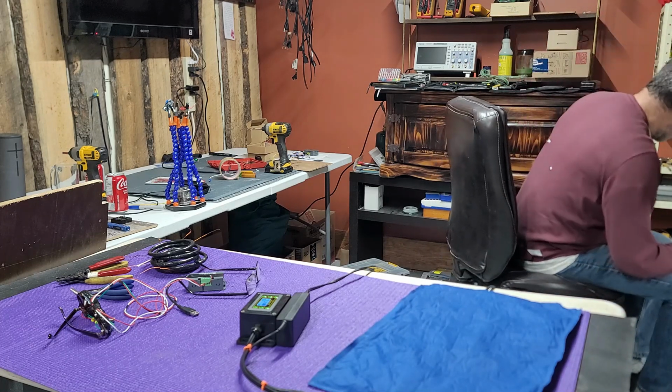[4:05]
I want to show you something that I'm working on. Where did I put it? Where did I put it? I outsmarted myself. Oh, there it is.
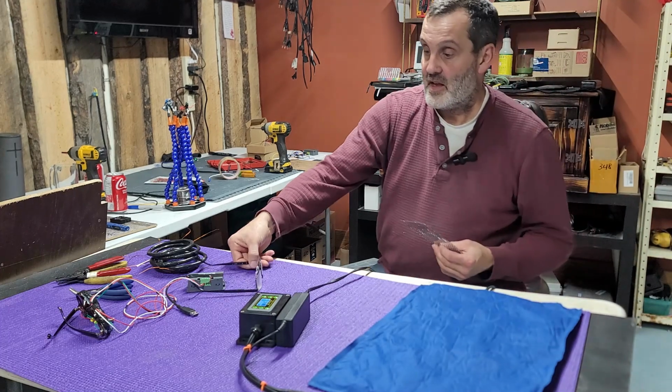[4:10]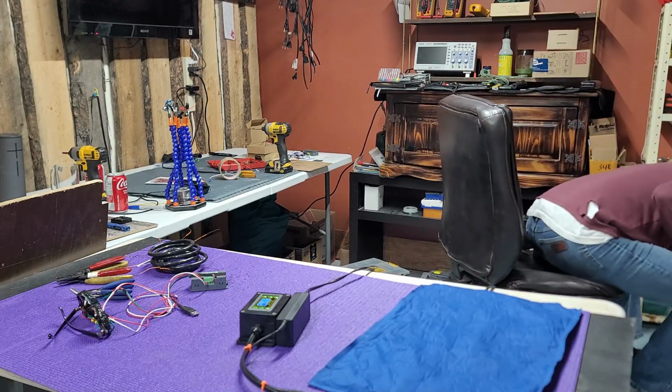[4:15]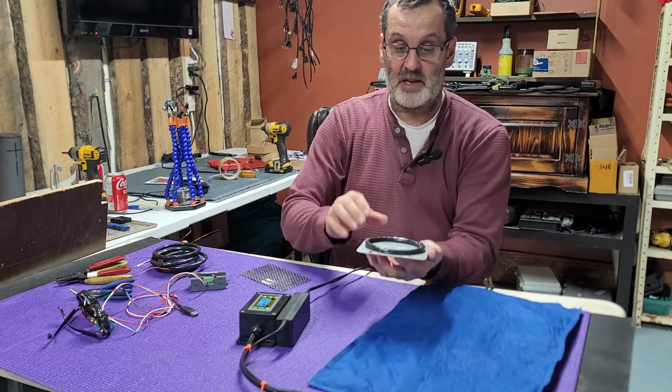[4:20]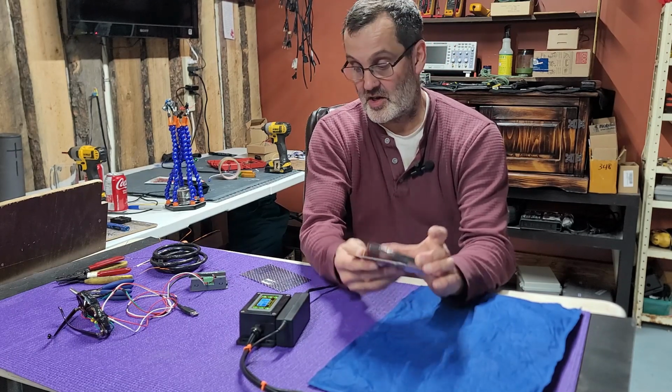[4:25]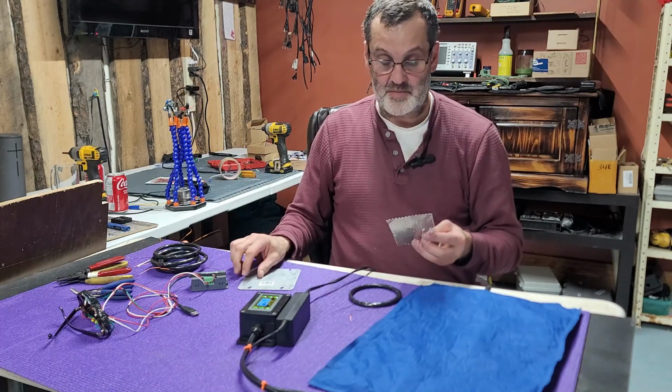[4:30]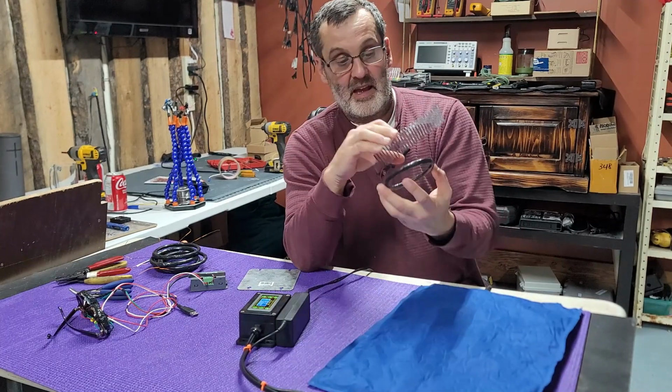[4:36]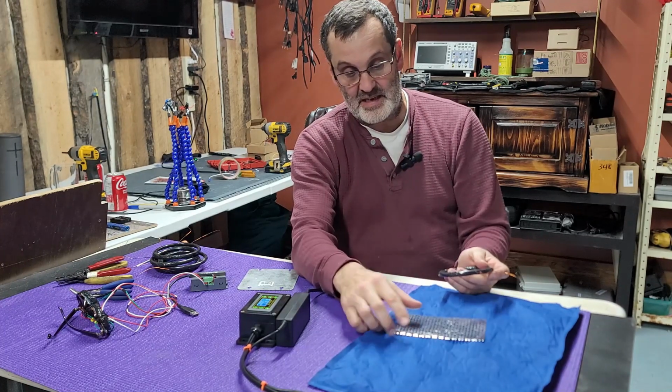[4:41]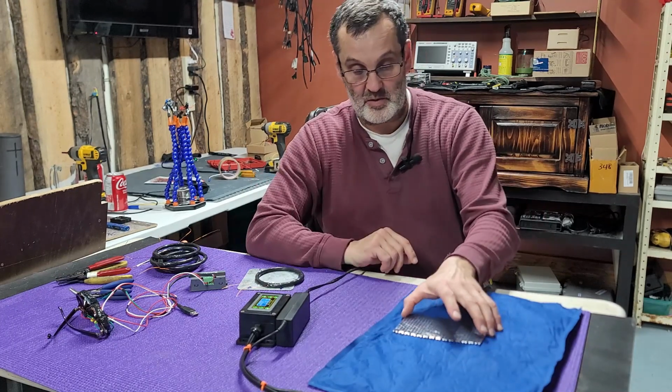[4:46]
I don't know if you guys remember when I was playing with these metal pieces. If you put that behind the ring, you would get a huge increase in gauss. These things are freaking heavy, and they're expensive. And then I had this. I used this as a template to drill holes, and I put it behind the ring. Lo and behold, bam! It just did it again. The gauss just increased drastically. And I'll show you guys in the video right away here.
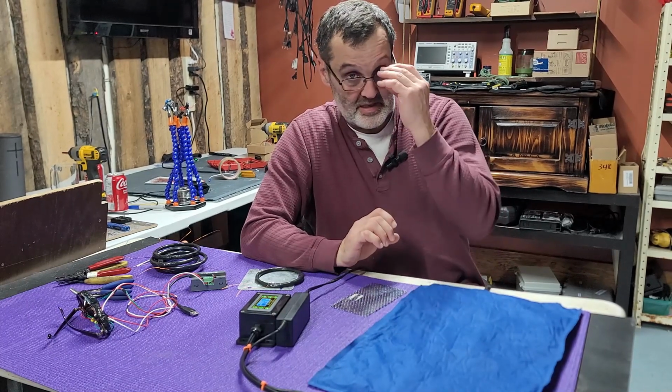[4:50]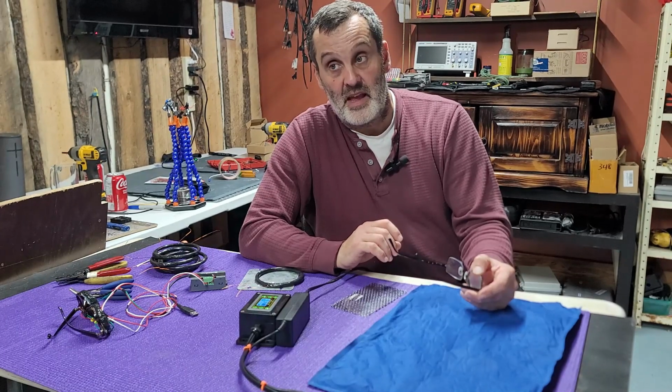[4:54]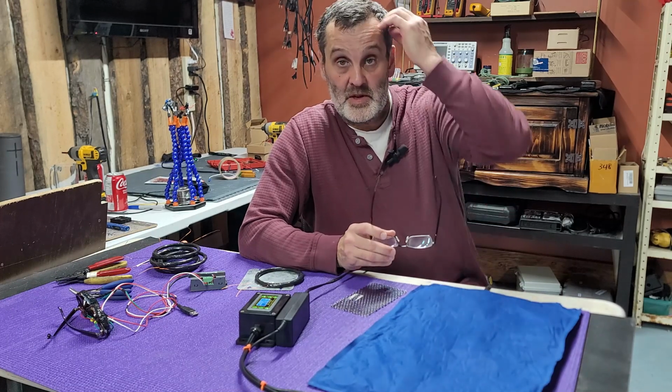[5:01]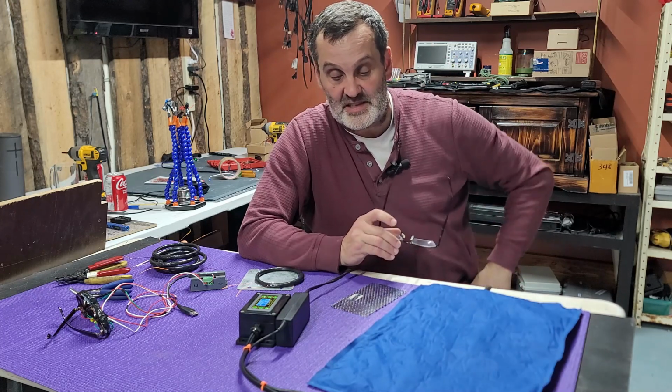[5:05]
So what I just did, I ordered stainless steel mesh screen for screen doors. And not all stainless steel is magnetic, but most of them are. It depends on the purity of the stainless steel and how much iron is inside. But hopefully that screen door will be magnetic.
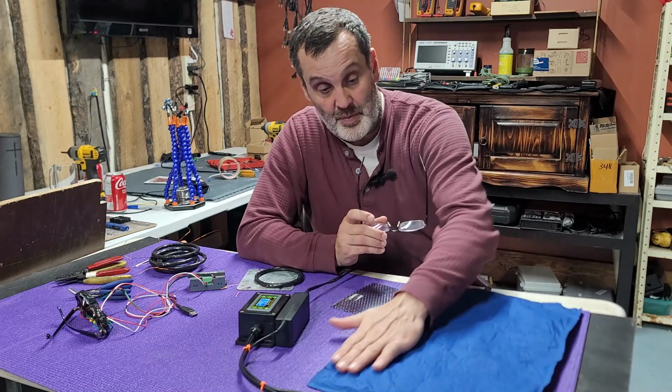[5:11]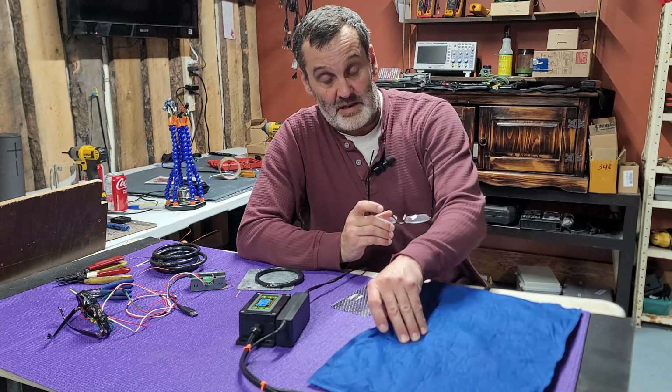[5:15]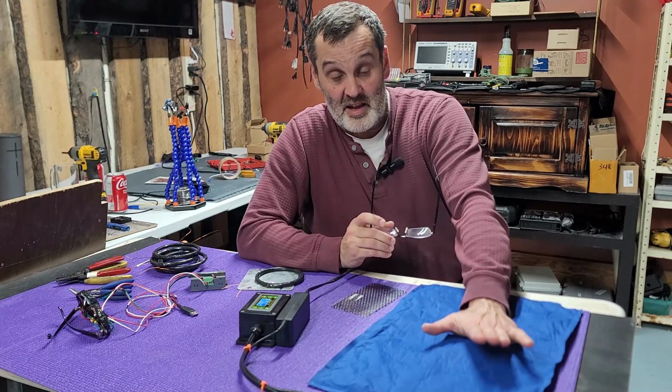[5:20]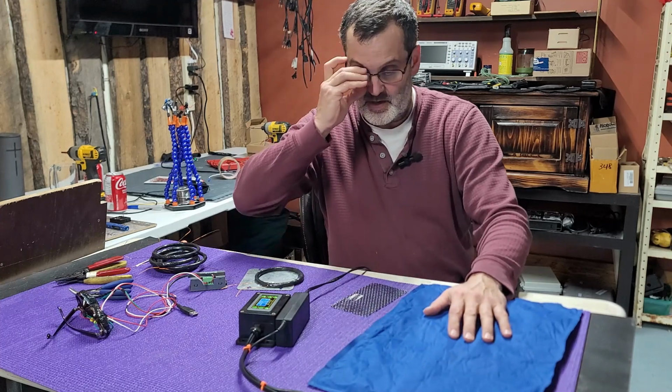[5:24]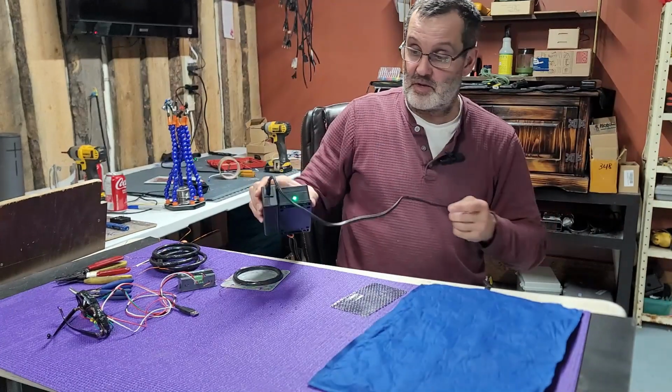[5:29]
And then I can put a patch of screen in there, and when you do that, we'll increase the gauss for like pennies on the dollar, and it'll just be amazing. So keep an eye out for that video. That's coming. As soon as I get the mesh, I'm going to be playing with that. It'll be incredible.
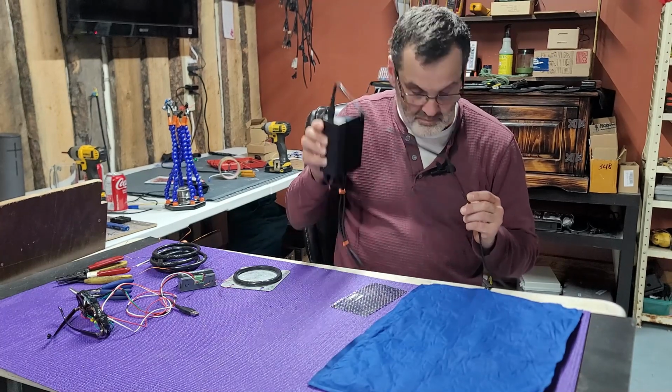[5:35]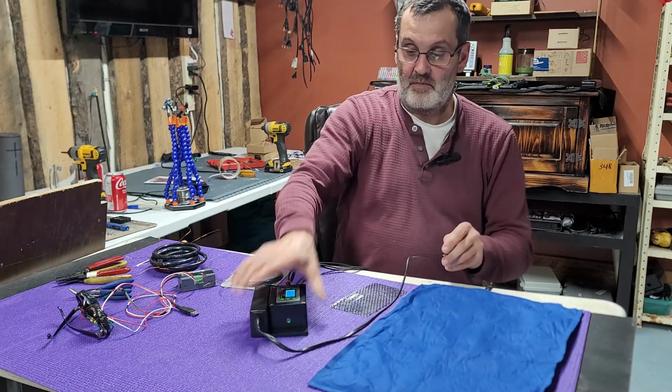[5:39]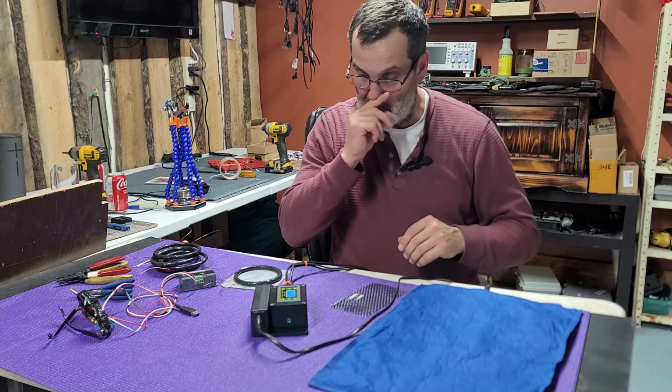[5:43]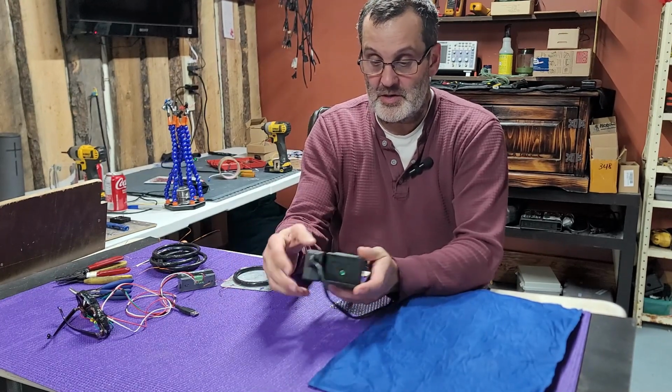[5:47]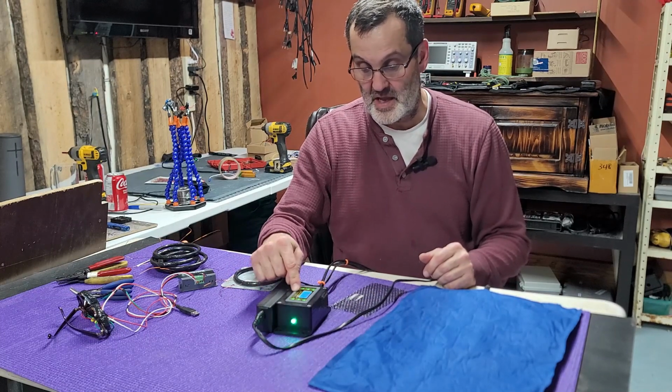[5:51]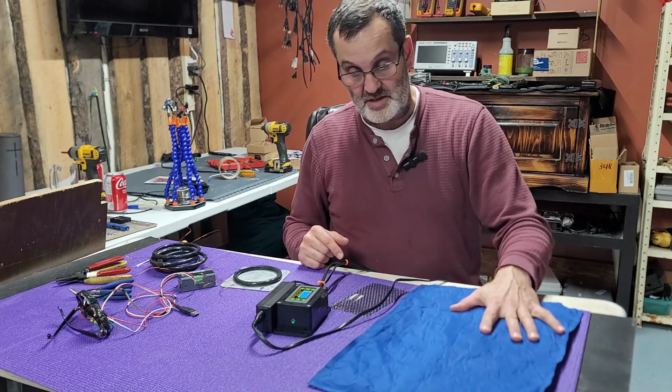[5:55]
Oh, I thought I was getting a short circuit there. It's the tie wrap rubbing on my jeans. So double-sided tape, power supply connected directly into the ZKPP2K, out of the ZKPP2K directly into the coils. Can't get any simpler than that. I mean, that's just crazy.
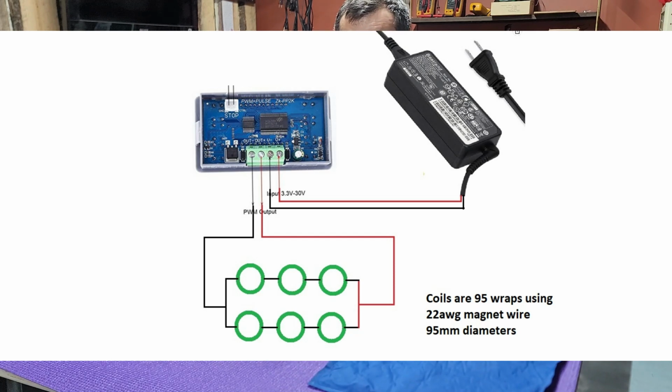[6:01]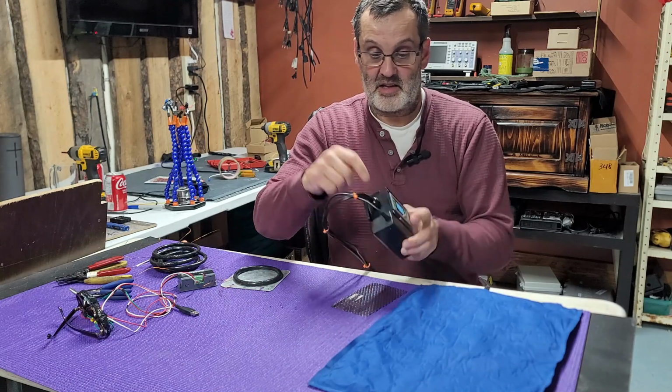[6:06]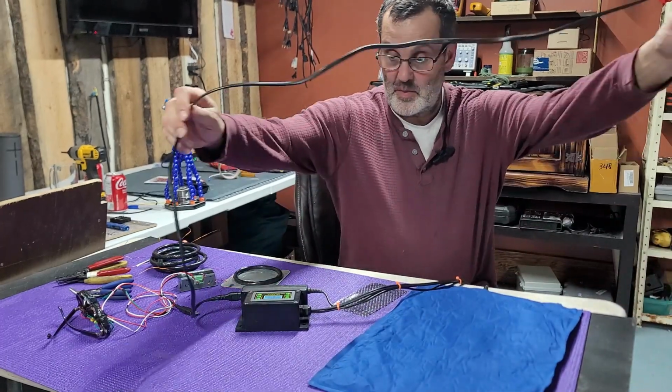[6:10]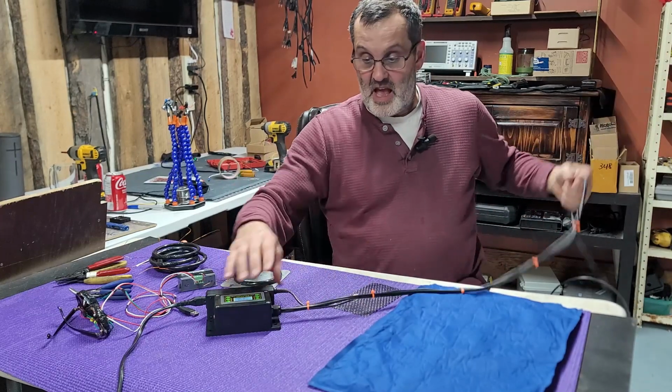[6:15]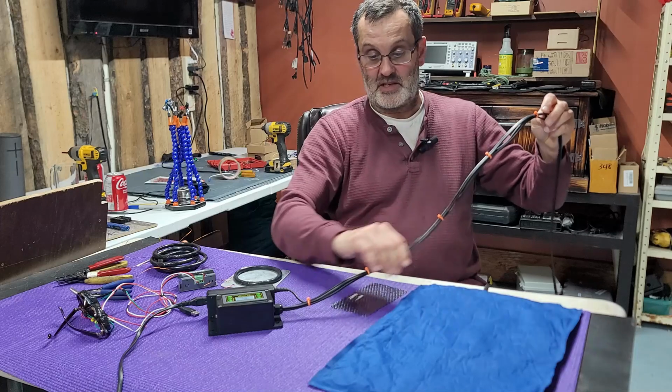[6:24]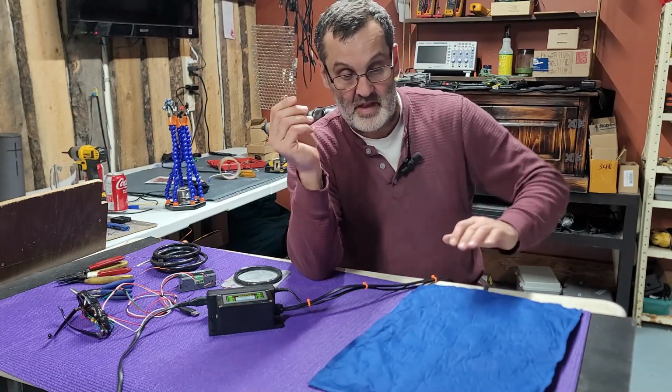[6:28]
And I got these tiny little boxes. They're like the perfect size for this. And I got that over there, the strain relief. And then it plugs in. And I didn't want to cut the wire too short because I'm probably going to disassemble that and use it somewhere else. So I just folded the excess and tie wrapped it right there. But big news is I'm going to gauss myself with this, and I got some screen coming.
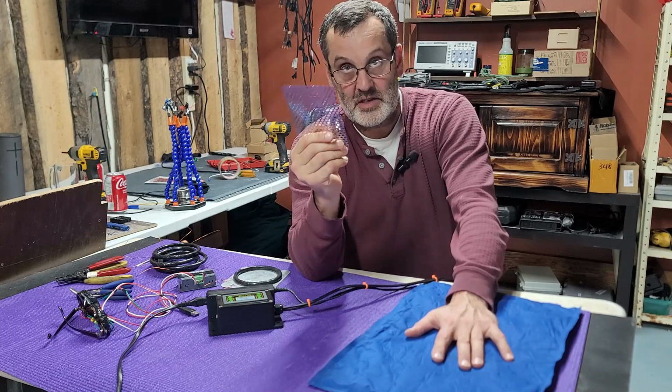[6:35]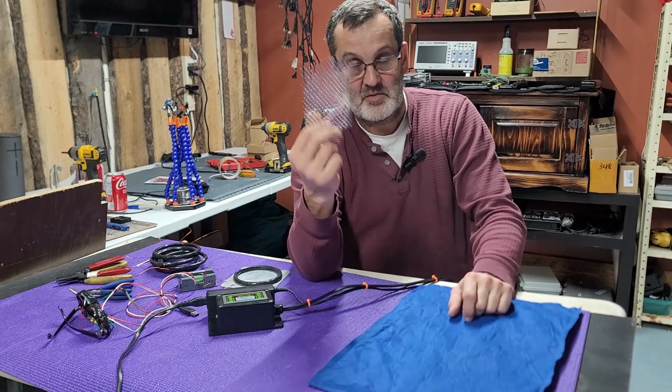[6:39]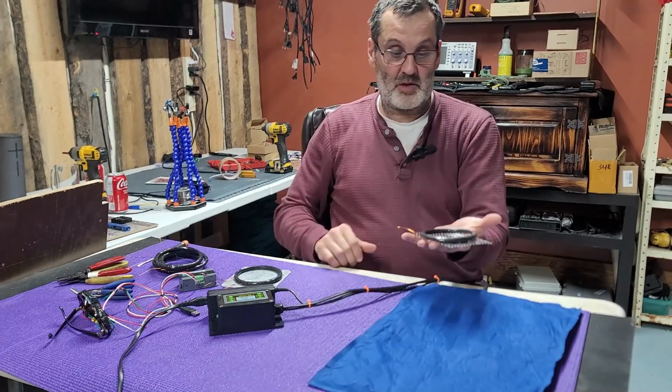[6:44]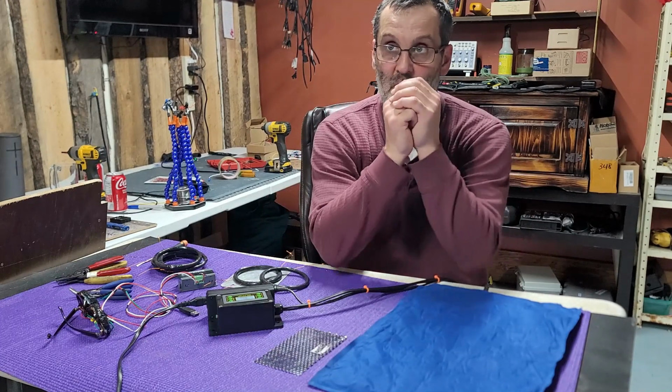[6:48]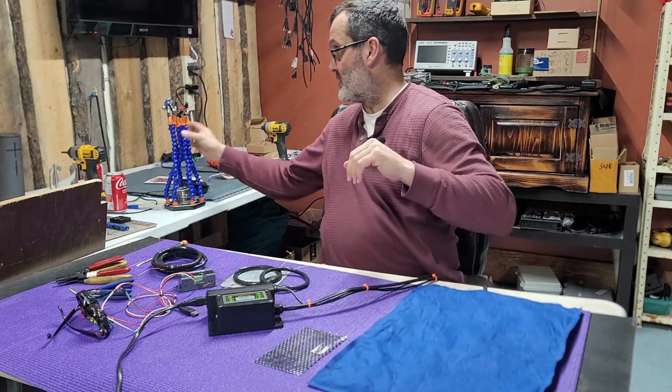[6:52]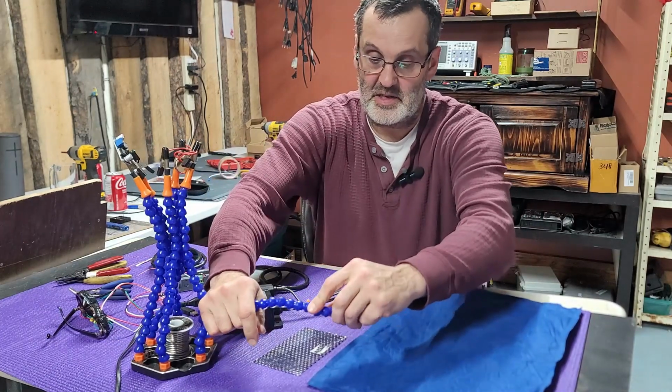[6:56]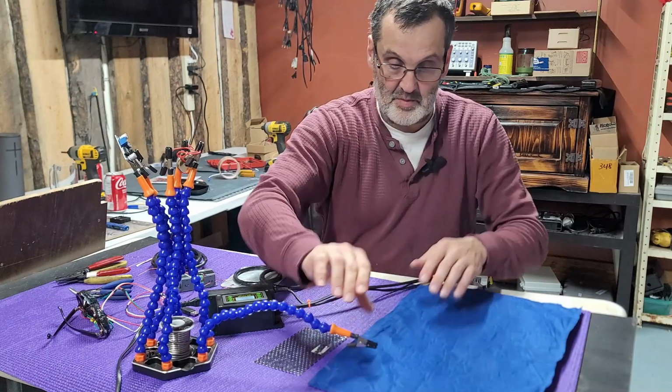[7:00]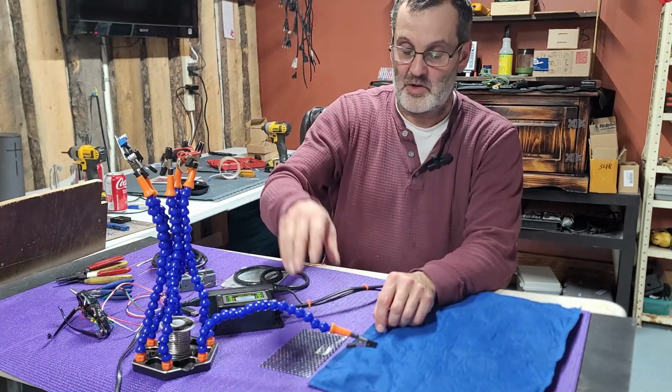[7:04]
If the bug screen doesn't work, I'll just order some more of this stuff. It's really light, it's more money, but put that behind the coil and you increase the gauss power. Like it went from 27, 28 gauss, the reading of the gauss, as long as you're doing the same thing all the time, right? That's what matters. So I had my gauss meter on that clamp right there, and I was reading like 27 gauss. Arbitrary number. We don't care about the numbers.
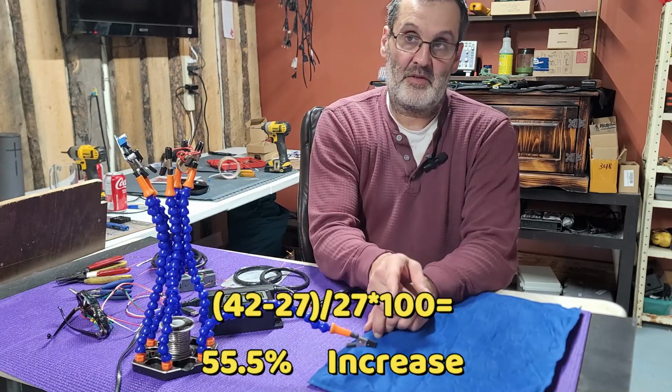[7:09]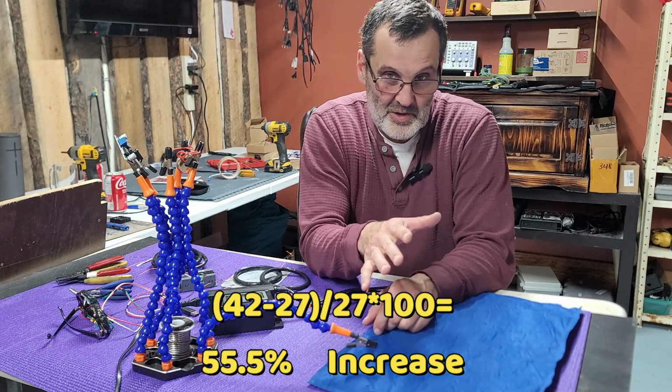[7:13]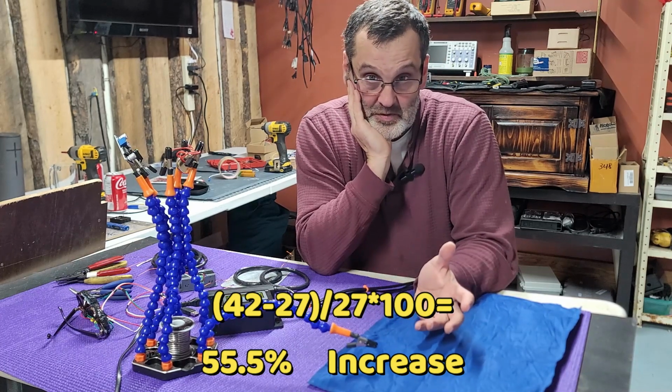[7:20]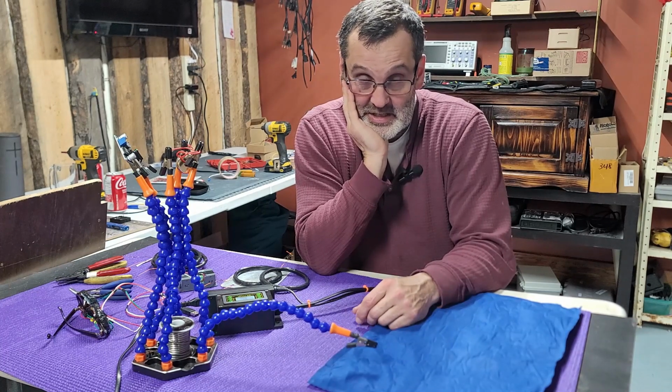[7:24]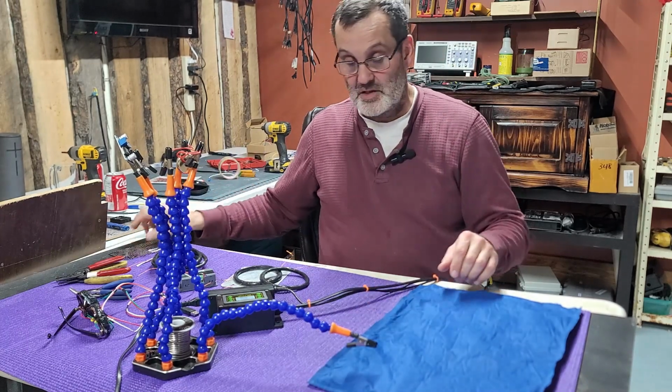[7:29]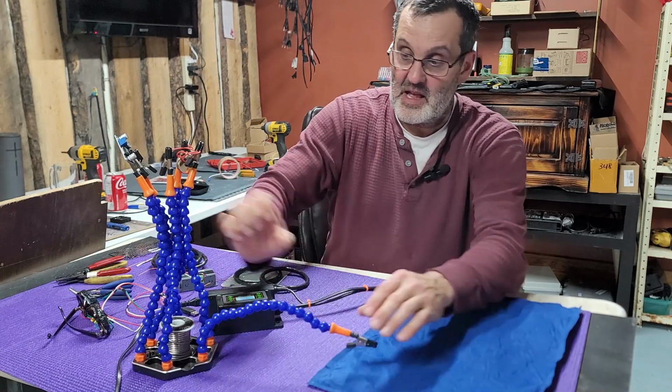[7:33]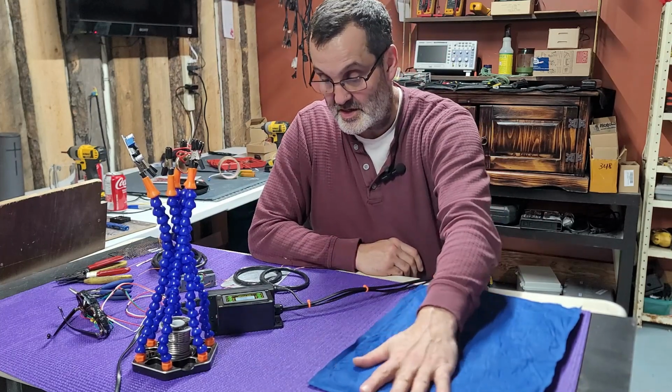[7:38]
We just care. I slid this underneath, put it there, and it went from 27 gauss to almost like 42, 43 gauss, 42 and a half. So let's say from 27 to 40 gauss. That's like an extra 12 gauss out of 27. So that's amazing. That's a huge increase for nothing. So if you take the maximum gauss around the coil, I think I was pushing close to 80 some odd gauss out of this, right?
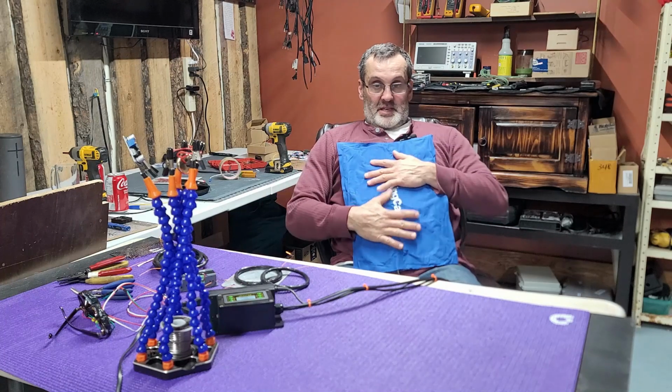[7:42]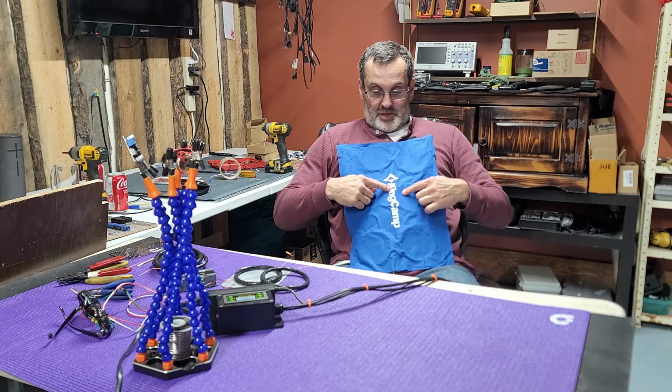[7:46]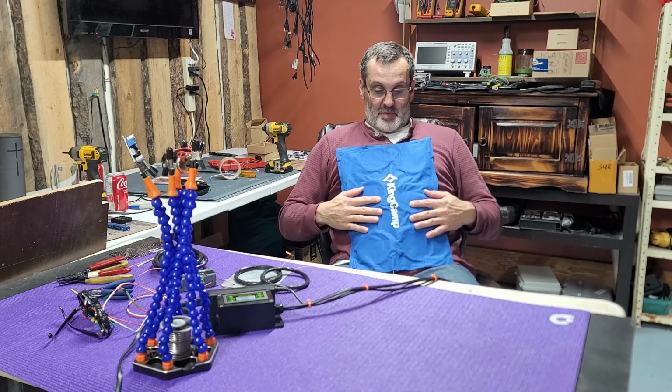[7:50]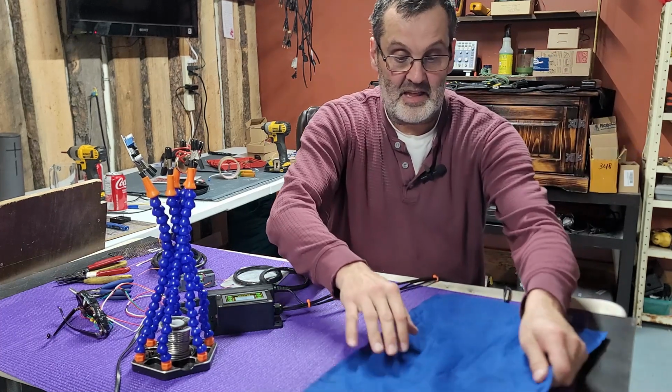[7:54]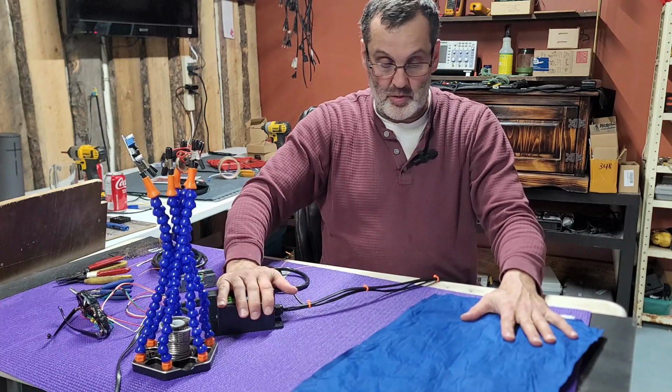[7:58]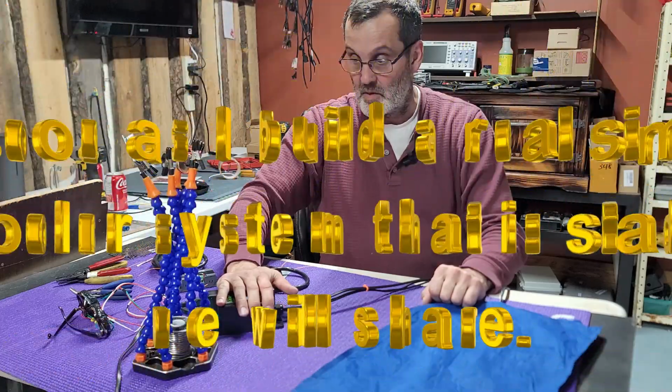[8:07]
And then this will be basically on my chest like that. A little bit of heat coming out of it. I'll make sure I put the screen on the other side so the sticker has to face out. That'll be my way of remembering. And this is phase one for the bipolar mat that I'm making for my friend. I'm just waiting for some parts in the mail to finish that, and then I'll make that video. Cool.
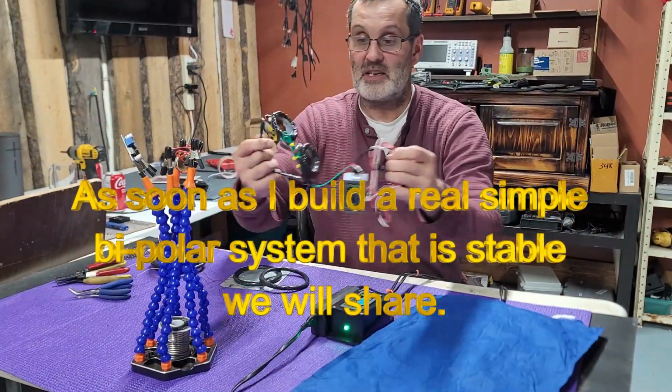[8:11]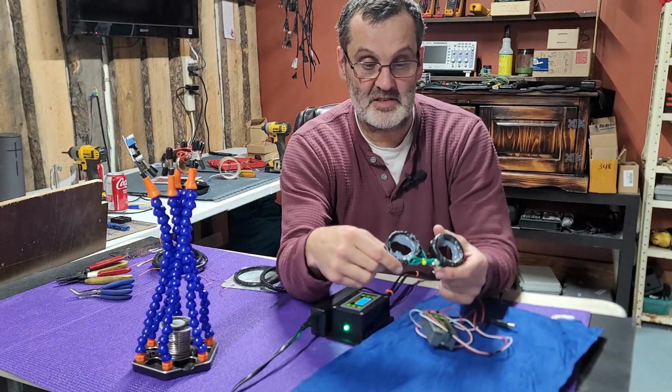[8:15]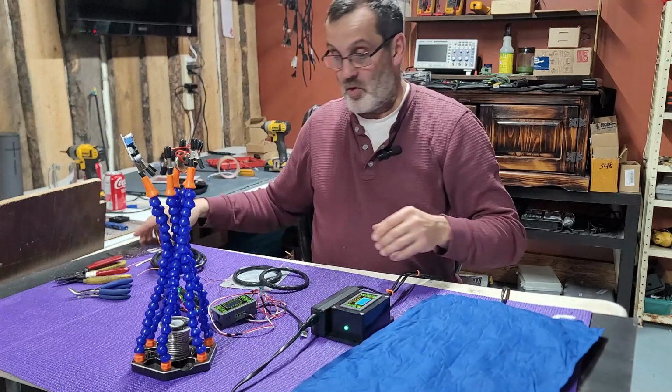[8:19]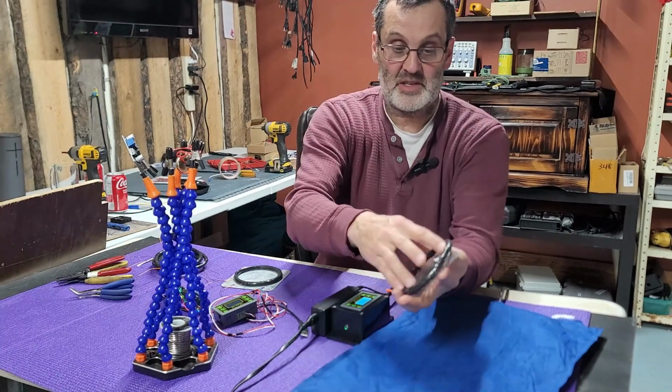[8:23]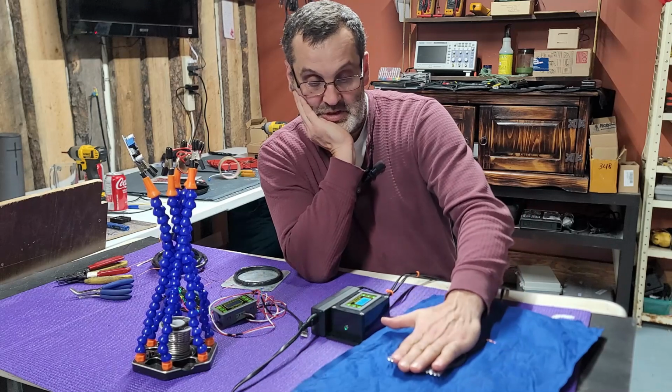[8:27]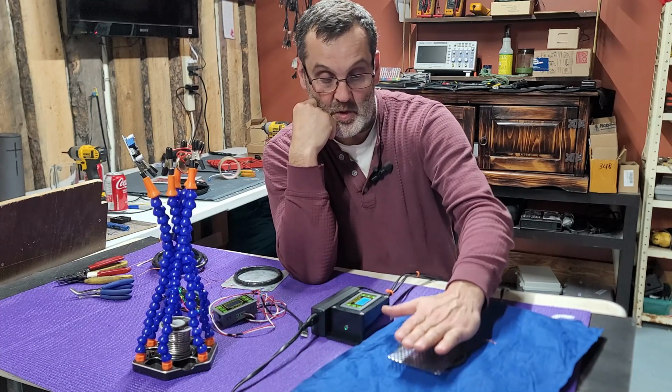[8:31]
There'll be an update on the glasses right away. I want to tell you guys, I added an LED on the glasses so I can see if they're working or not. Yeah. Oh, something else that this did, when the coil was inside the mat, if you put your hand on it, you could feel it pulsing. So that'll be a really good way to know if your coils are working or not.
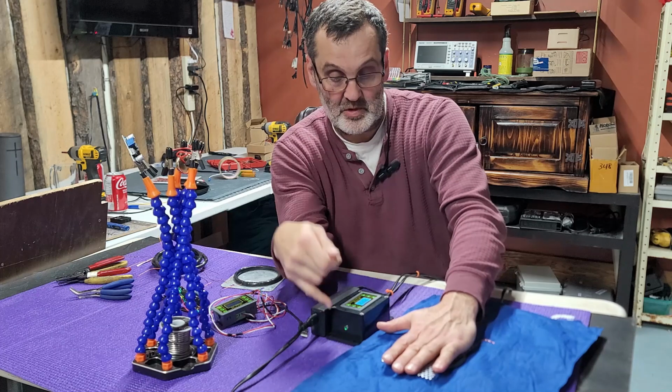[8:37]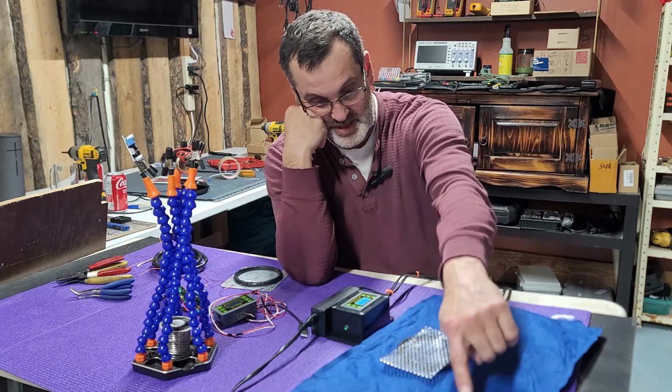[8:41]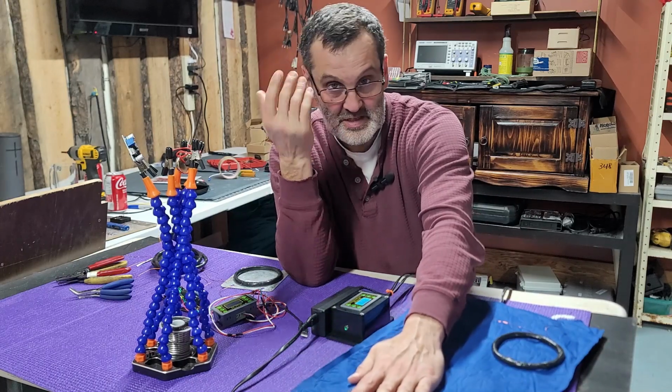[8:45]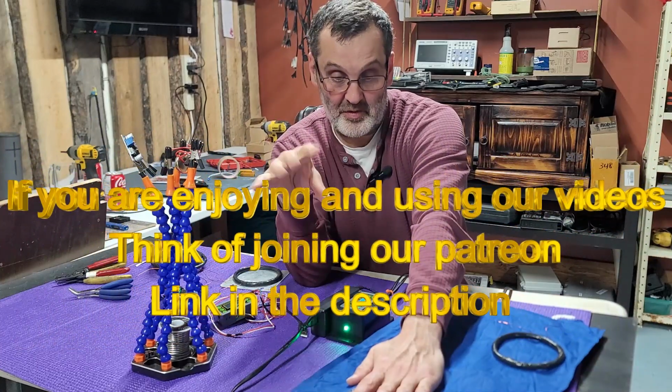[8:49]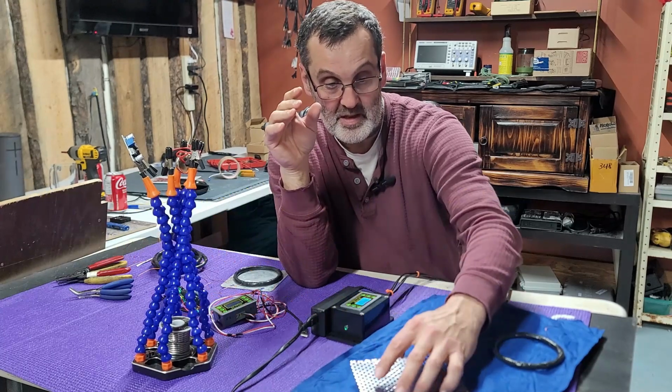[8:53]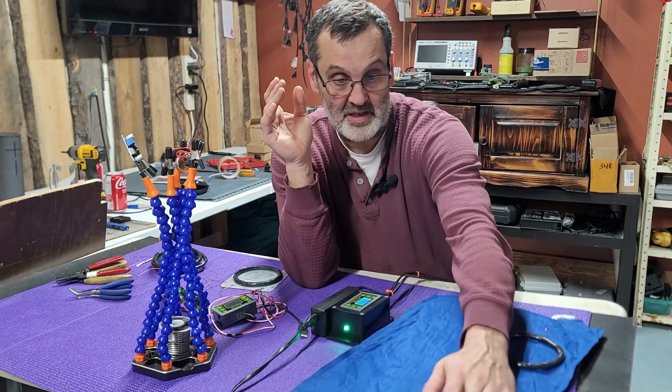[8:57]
You won't need anything visual like this, which only tells me that the ZK is working. It doesn't tell me that this is working. But when you put that on it, I mean, it's too bad it's a video. Right now, I can feel the pulse. I can feel the thing going pum, pum, pum, pum. So having that, you could just put your hand on it and you could feel it. So I'm really excited for that.
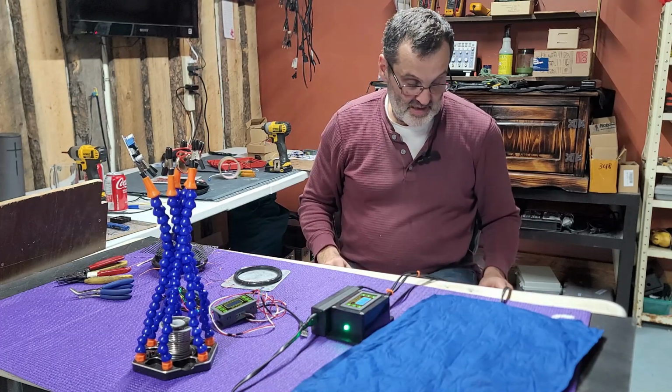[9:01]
So don't go out buying anything yet. Mine is ordered, it's coming, and I'll make sure the next video coming out will be about that.
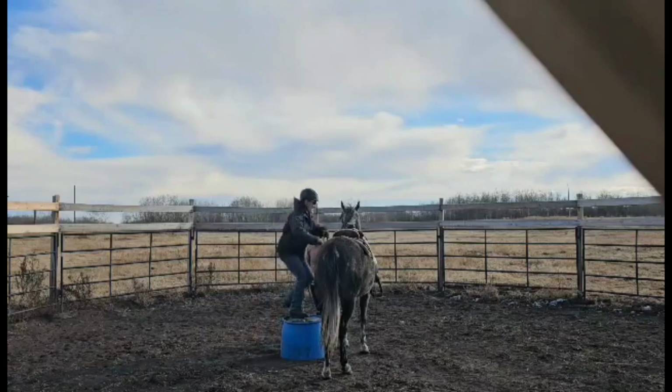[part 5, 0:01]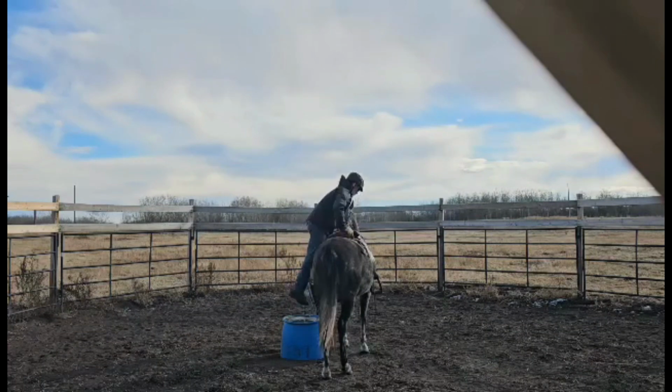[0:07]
A lot of people are asking me how I hurt my shoulder, and some of my Patreon even told me to get a new hobby. You're gonna see the video of what happened. Yes, you can ride this stuff. She wasn't doing anything super silly that was hard to ride.
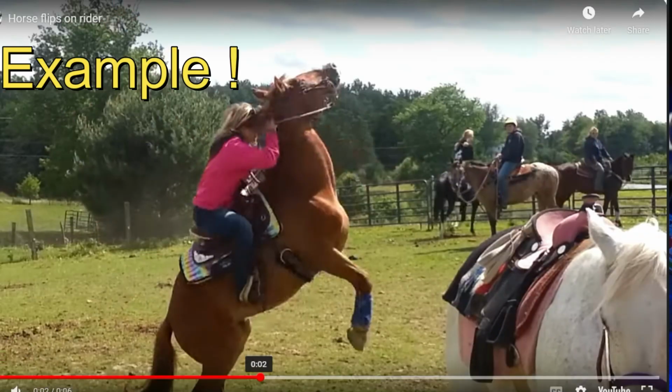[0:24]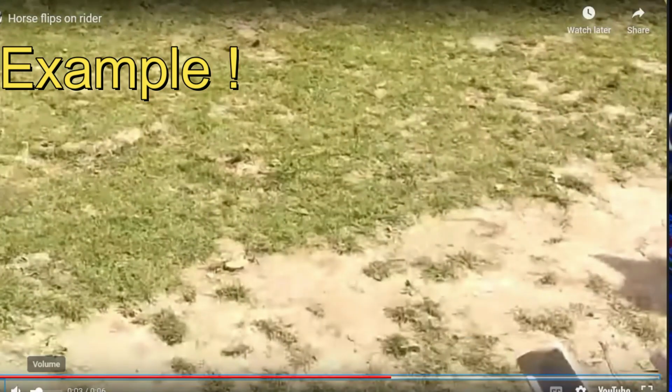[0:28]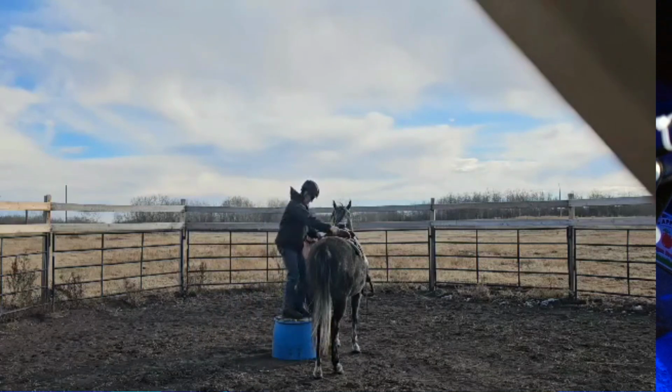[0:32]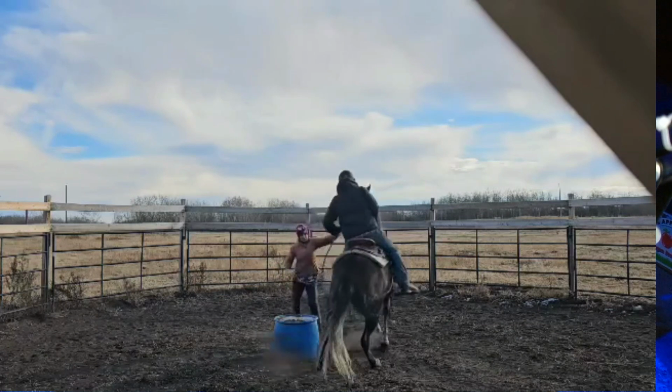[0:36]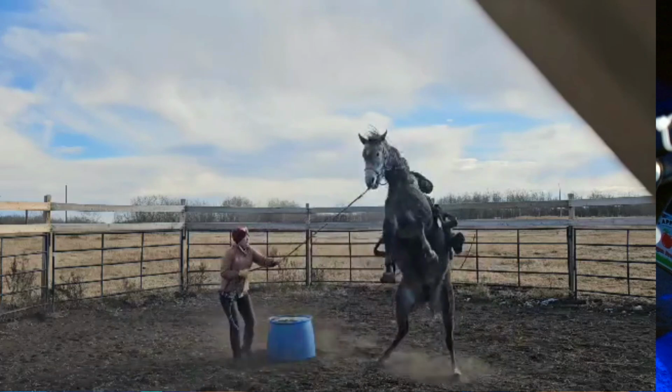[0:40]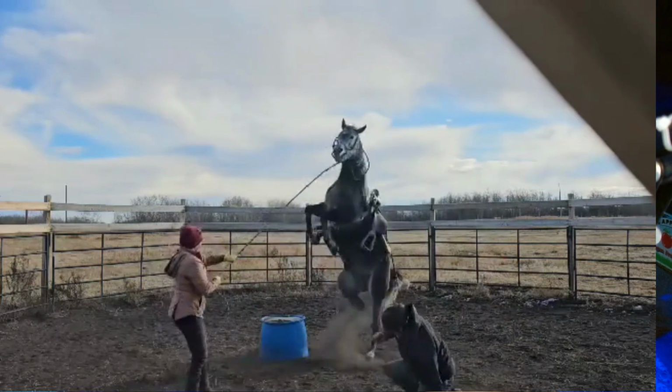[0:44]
What's dangerous is the flipping over. Now, I have my wife there to hold on to her. She had a history of that, and I thought I got that out of her. I've been on her back a bunch of times, and then she went right back to her baseline. So, as you can see, when I fall down on my shoulder, I rolled, and this is where I really hurt it.
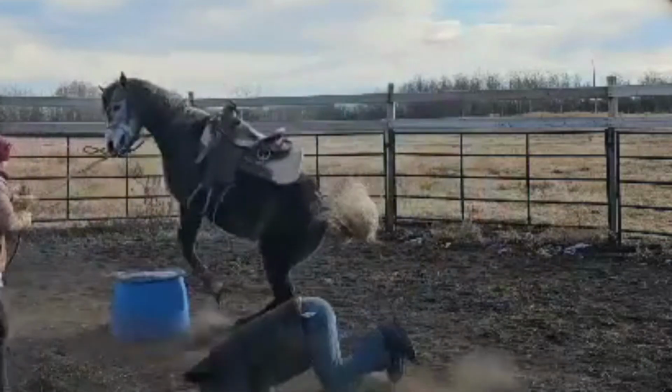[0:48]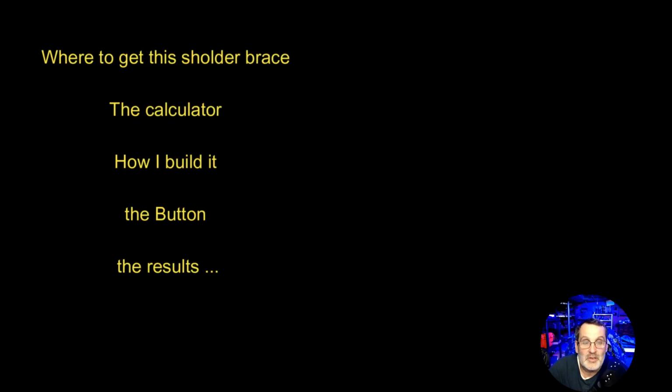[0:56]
And I have always had a bad shoulder there. I dislocated it a bunch of times. But this is what today's video is about, guys, and the benefit of it and how I'm feeling now. Here's what we're going to talk about today.
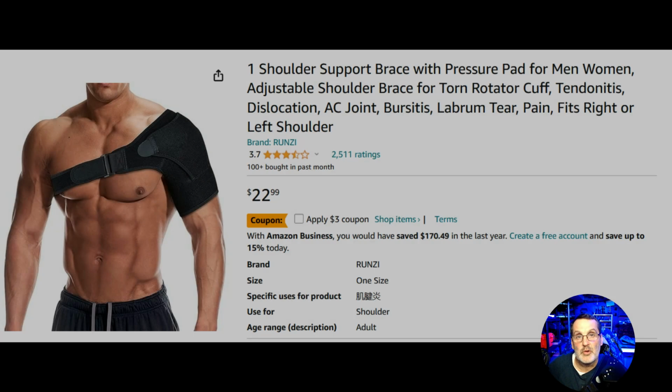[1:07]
Where I get the shoulder brace from. We're going to do some calculation. We're going to talk about the build, the magical button, and then the result that I got from all this. Took my shirt off to show you guys what it looks like. I typically don't like to wear it directly on my skin. I wear it on top of my sweaters and stuff like that.
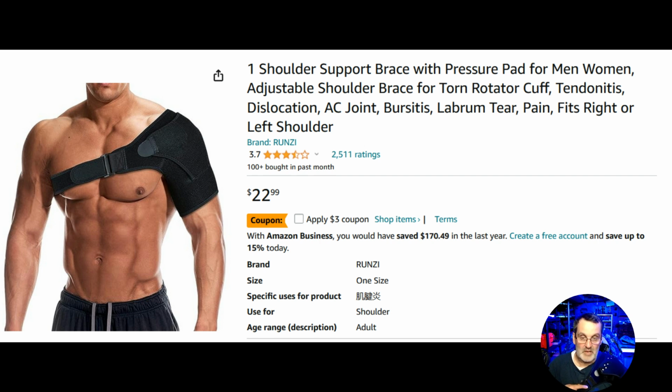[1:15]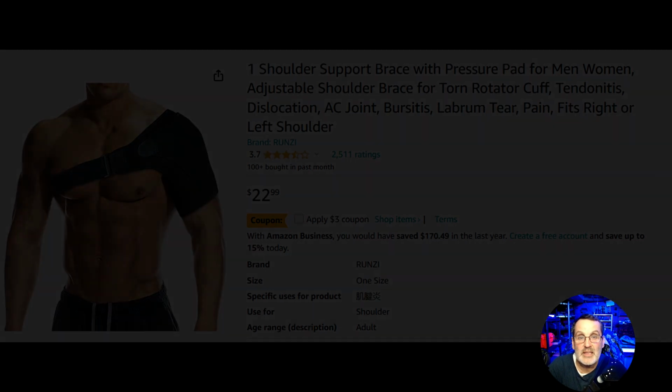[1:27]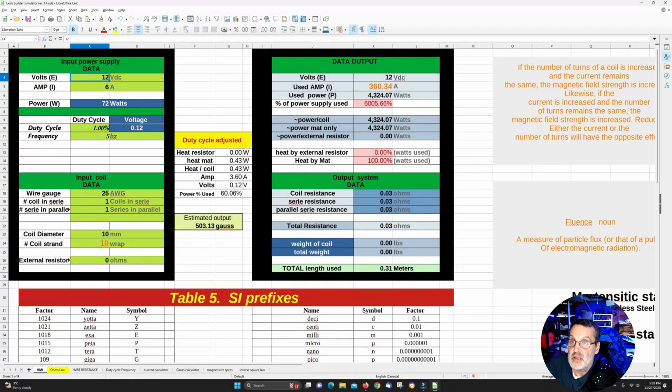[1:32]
It's really good stuff. They work really good just by themselves. They help with that. But the good thing about this one is it's got the flap, and then you can mount the stuff inside. It's got all kinds of places to hide things. Magic calculator. I love it.
Now we have 3.2 volts. We're going to series-connect two batteries. That's going to give us 6.4 volts. They're 3500 milliamps each, which is 3.5 amps. Now the trick is there is another way to use a calculator for the one that don't know. I know my coils are just under 9 ohms, 9 ohms each, those PCB coils.
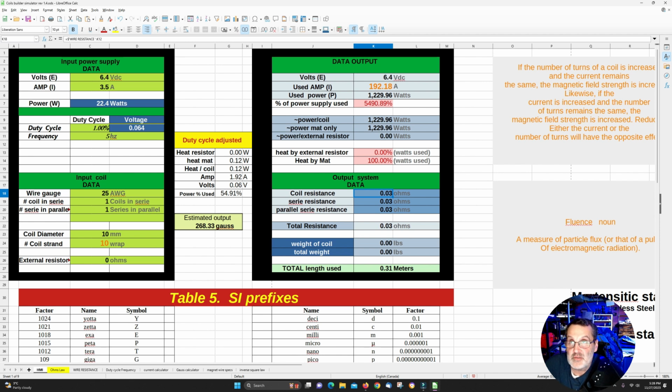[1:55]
So if I take the resistance of my wire, which is about 0.3 of an ohm, I'm looking at about 8.5, 8.6 ohms. So I'm looking to get this at 8.6 ohms. So I'm going to cheat. You could enter it directly right here if you wanted to, but so we don't mess up the formula, I'll just put 100 and 100. Enter. So that gives me 3.2. Let's go 200, 6.6. Let's go 300, 9.9.
So let's go 250, 8.3, 275. 260, there you go. 260 is pretty close, right? Now we're gonna put four of them in parallel with one another, and that gives me 84%. So I'm still within my battery power, and I can go with four in parallel. That would be perfect. So that's another way to use the calculator.
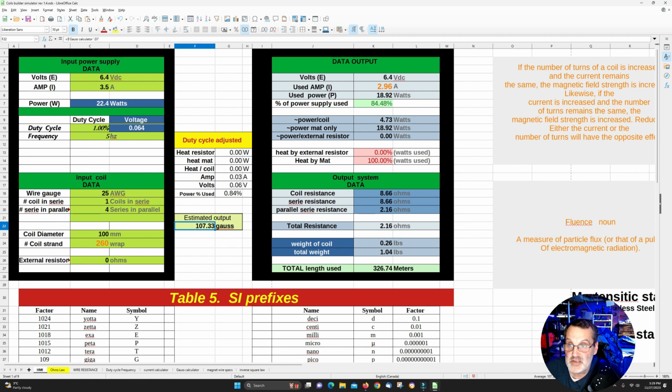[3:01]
Don't worry about the gauss here, because it won't work, because we changed too many parameters, right? It only works with the 95 mil coil. So I hope you guys enjoy this particular part. There's a magic calculator used again. It's free on the Patreon. You can just go and download it. You just need to sign up for Patreon, and then you can get it when you're there.
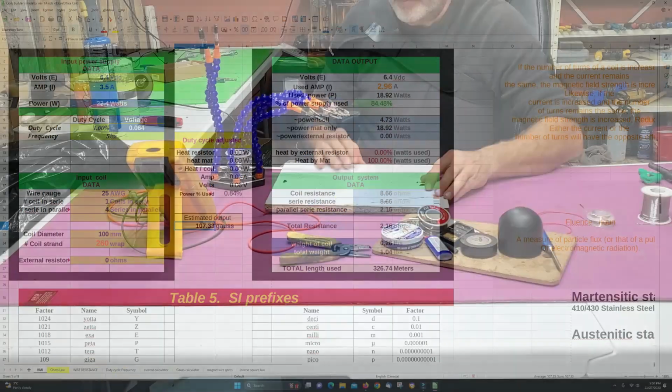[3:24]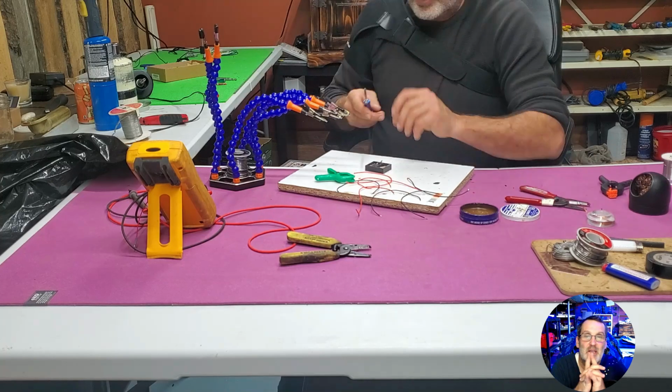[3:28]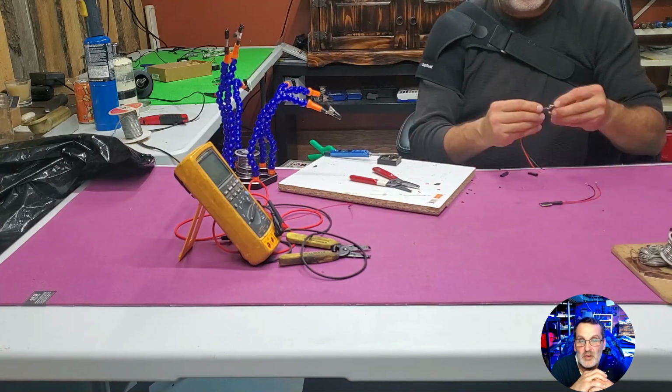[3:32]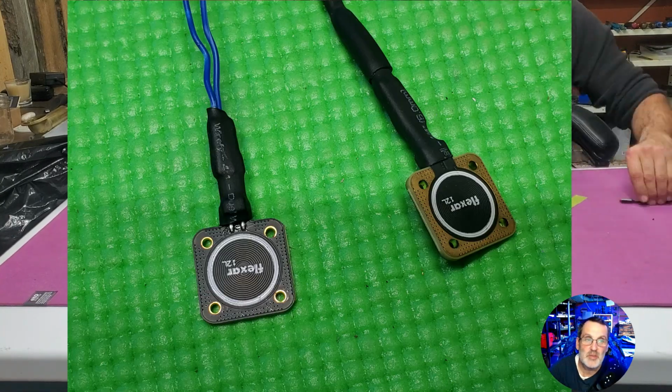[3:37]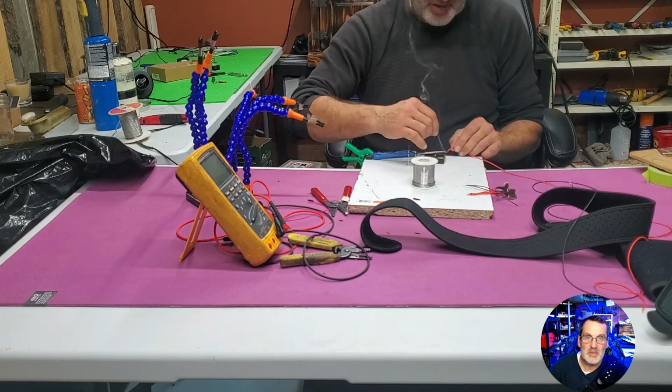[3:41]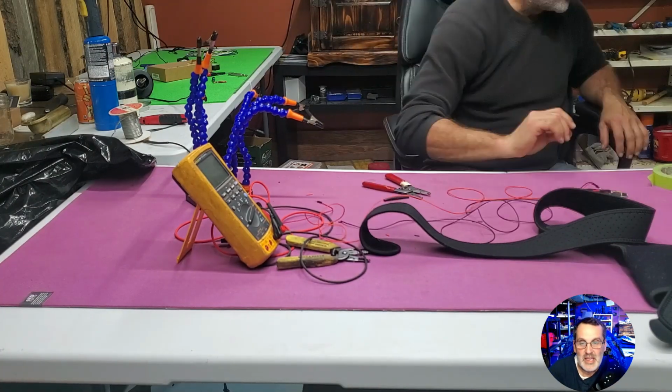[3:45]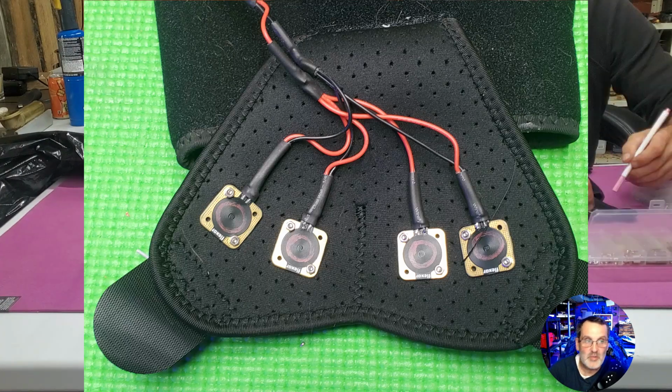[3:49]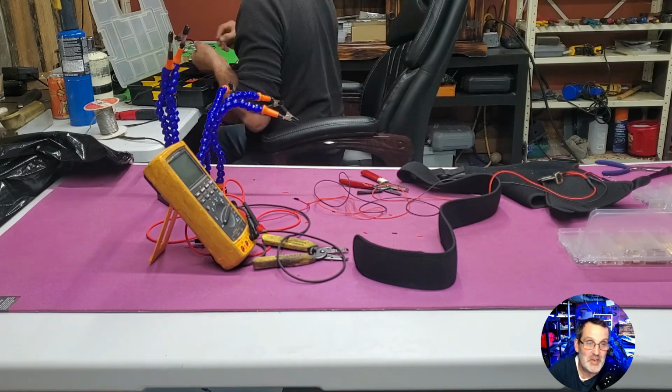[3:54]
Let's have some fun with this build. So basically you gotta solder all the wiring to your coils. They don't come pre-wired, and I like to put some heat shrink on it to protect it. Then you just gotta play around and place them and see where they would fit properly on your shoulder. It's a lot of tinkering around, right? It's just the way things are when you invent stuff. Sometimes it's painful, sometimes it's fun.
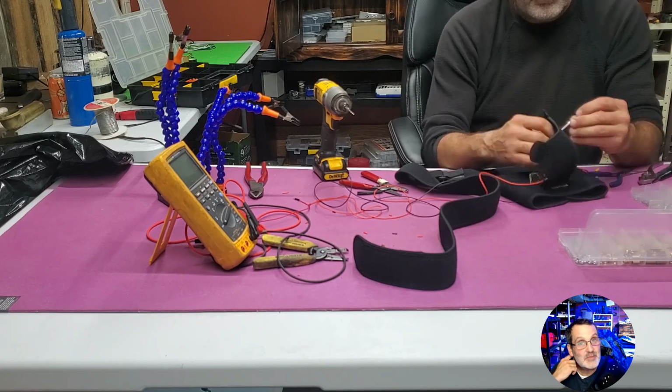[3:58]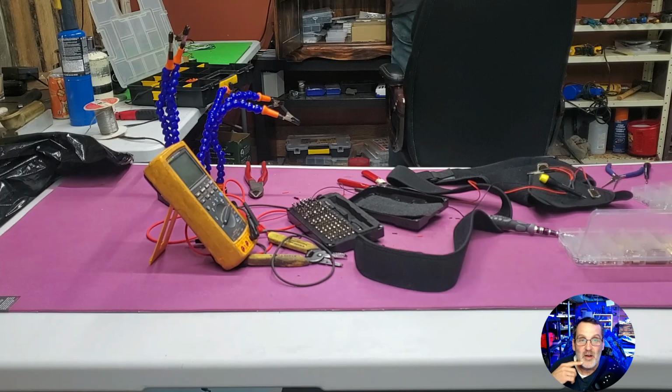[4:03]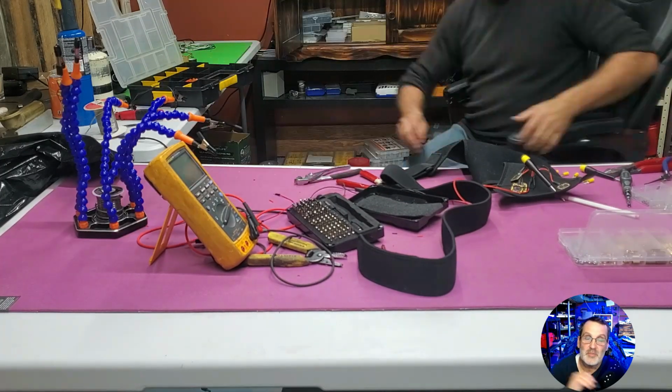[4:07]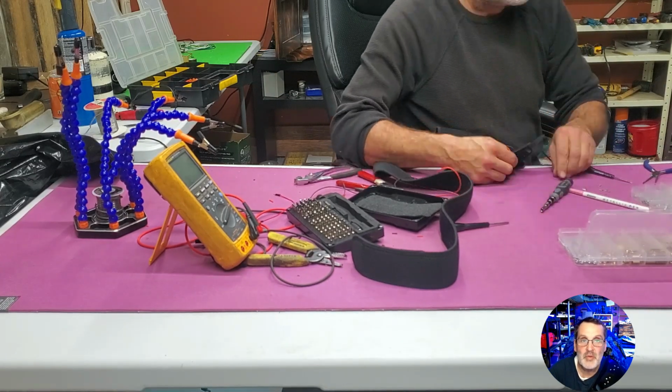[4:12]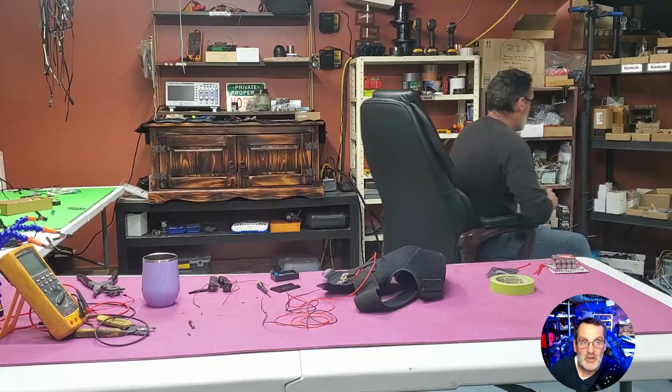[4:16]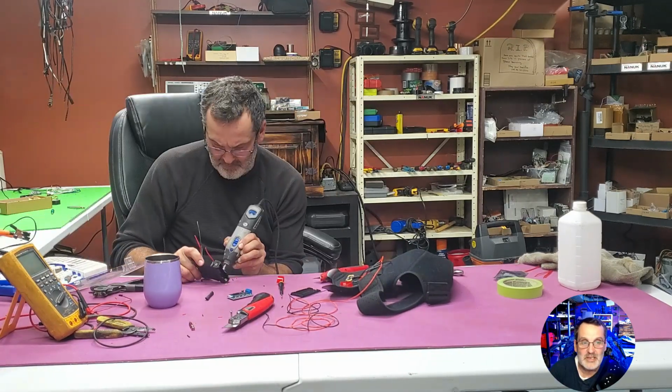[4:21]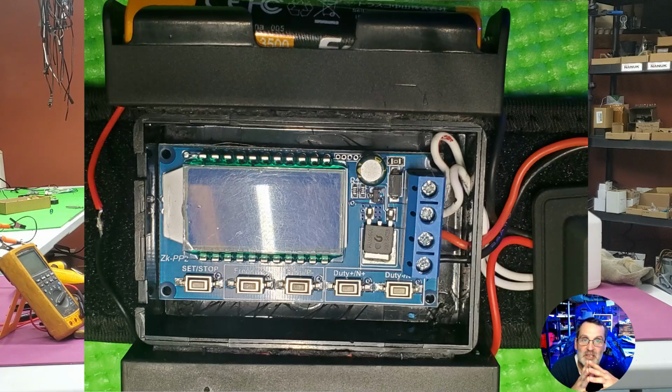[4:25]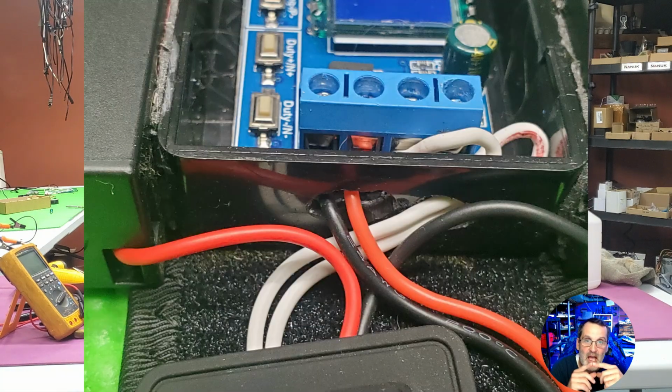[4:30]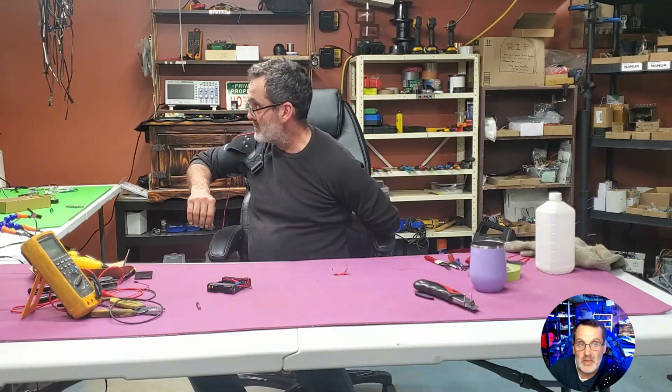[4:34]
Mounting the coil permanently onto the brace itself posed a challenge. I hate sewing. I think that would be the perfect way of doing it, to use a thread and needle and sew it on. So I decided instead to use a mechanical way, and I'll show you that in a second. The box, as usual, you just gotta clean it up, make sure everything fits inside, drill some holes for the wire. I use double-sided tape from Gorilla to keep the stuff in, and that works really good for me.
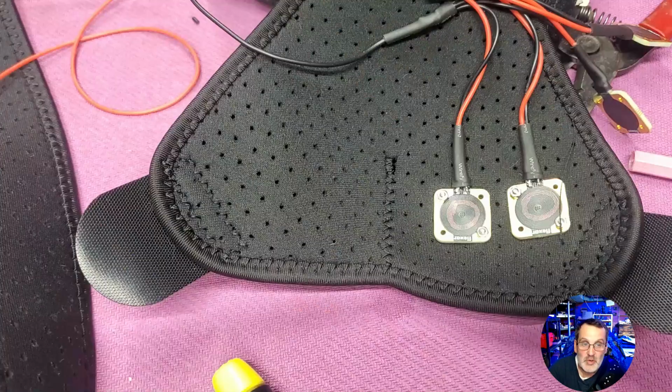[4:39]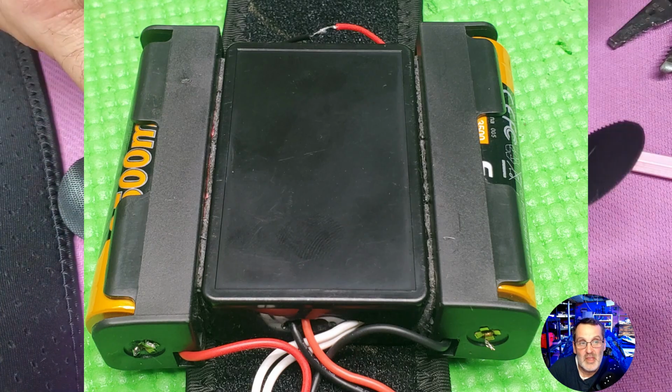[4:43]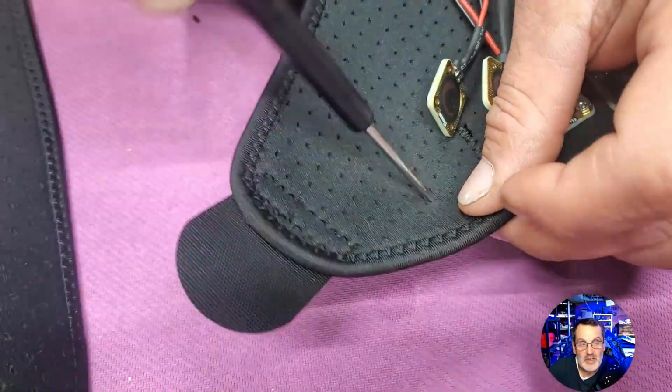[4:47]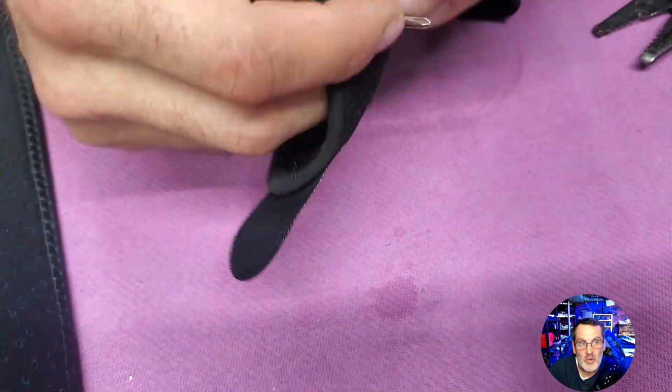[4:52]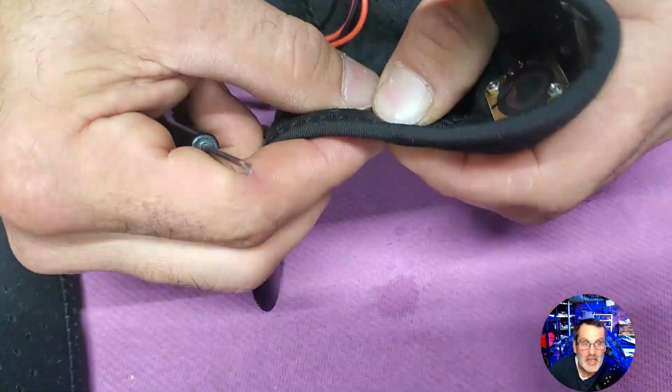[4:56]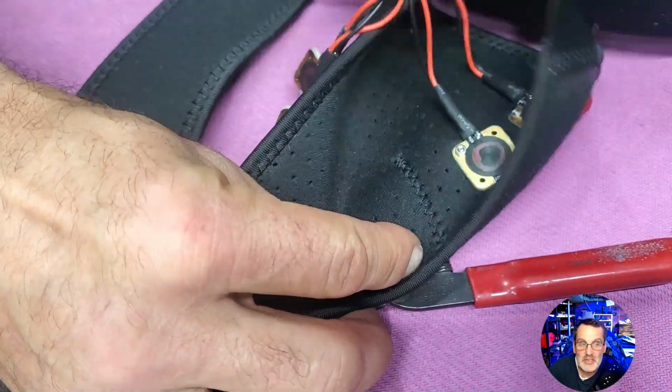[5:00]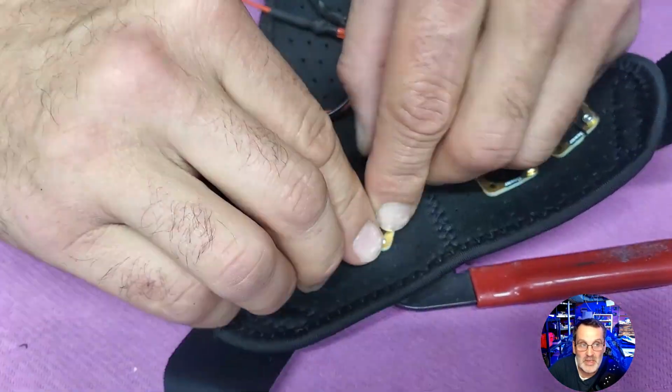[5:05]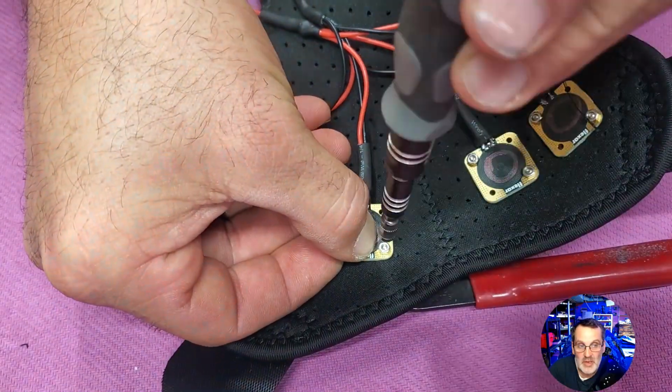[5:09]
I use shoe glue to mount the box onto the brace itself. Now there's the, I use a hole punch for leather. I made a hole, and then I got these screws, and I made my own washers for them, because the screws would go right through the fabric. I like it. It was really painful to do, because it was barely long enough. You had to compress the fabric really hard to get them in, and I put two screws, one in each corner, opposite corner, to hold it in place.
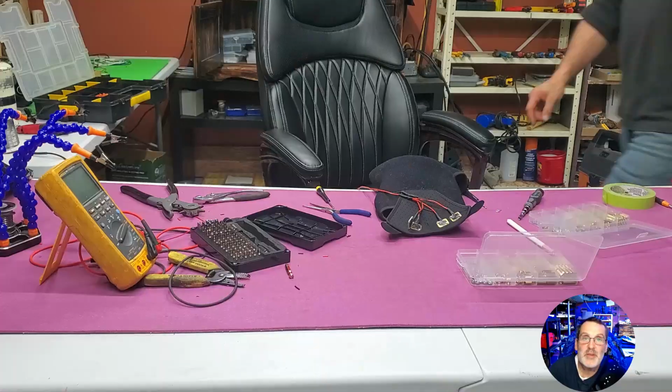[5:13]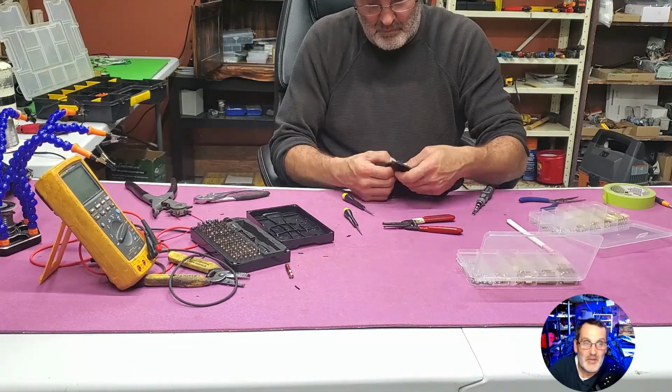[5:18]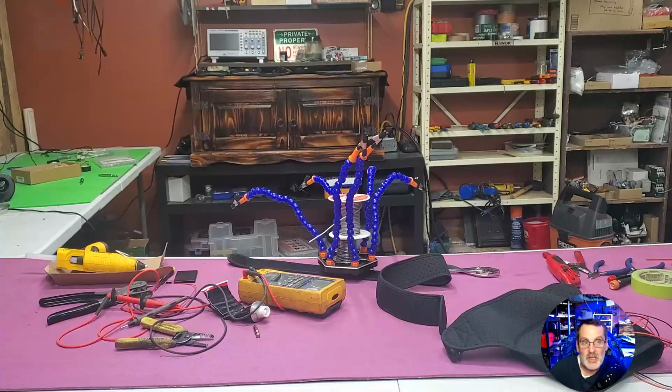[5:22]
And I got a lot of fancy tools. Every time I need a tool, I just go get one. I just love that. And then I finished them up and I mounted them up, and I was pretty happy with the results.
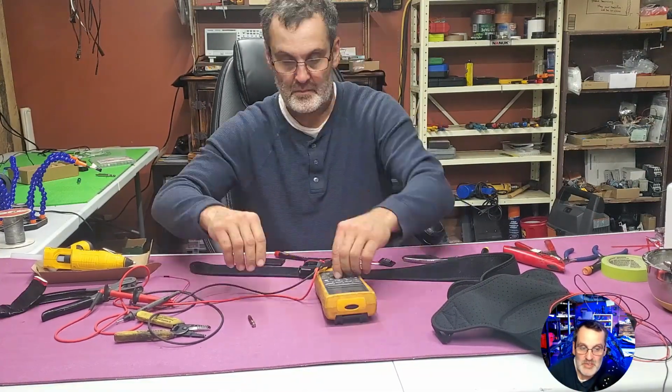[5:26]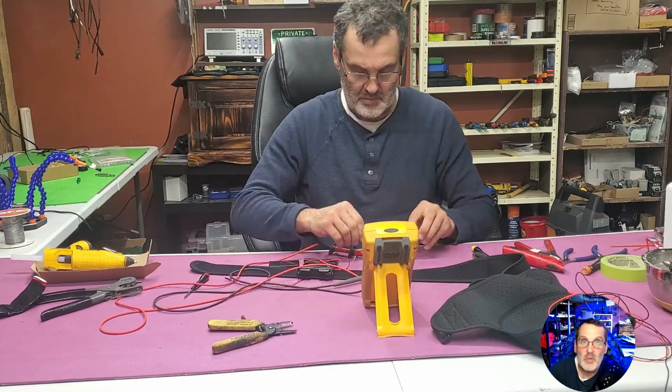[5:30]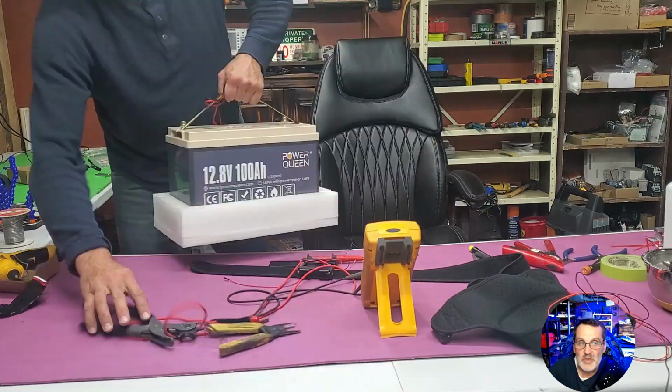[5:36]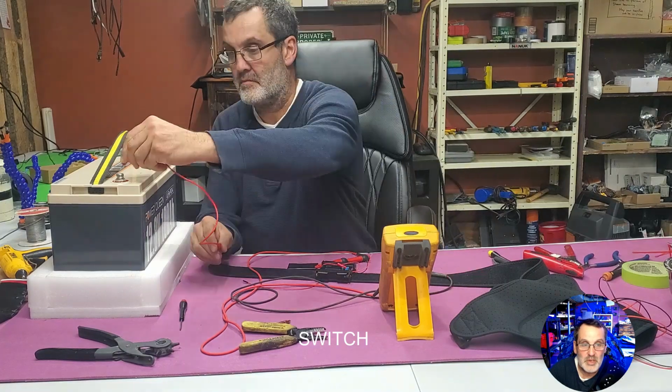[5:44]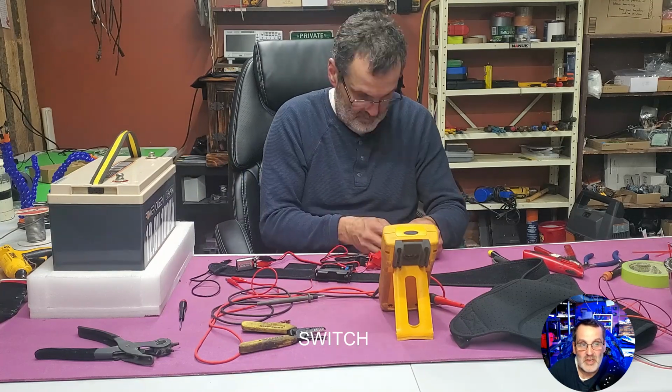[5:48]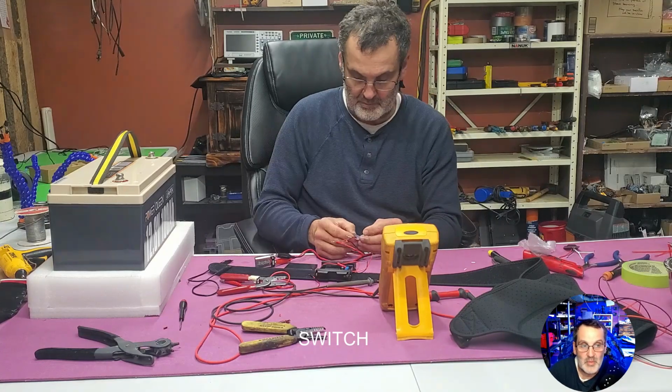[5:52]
The switch was something else. I couldn't figure out how to make it work. I thought I had a faulty one at first. So my meters, they're sourcing meters, and I was trying to source out of it, and I gave up, and I just went to get a 12-volt battery. So there's the button. I get them on AliExpress. They're pretty good. And then I realized I had a 9-volt battery right there, which was a lot easier to work with. So I just used my 9-volt battery to test the button.
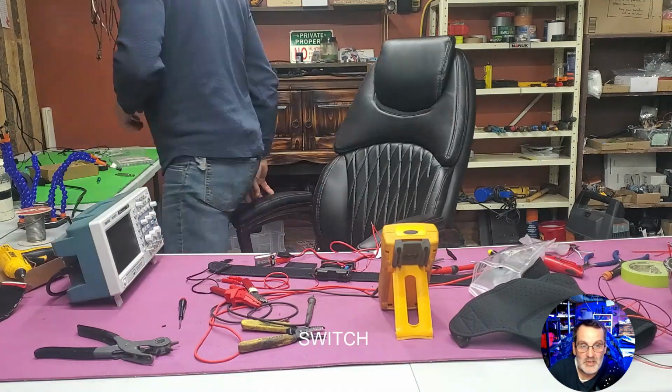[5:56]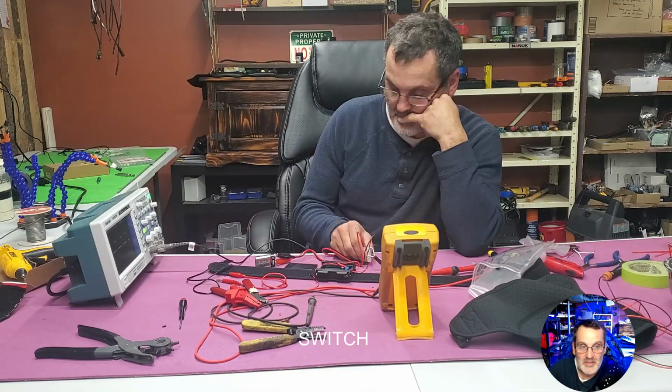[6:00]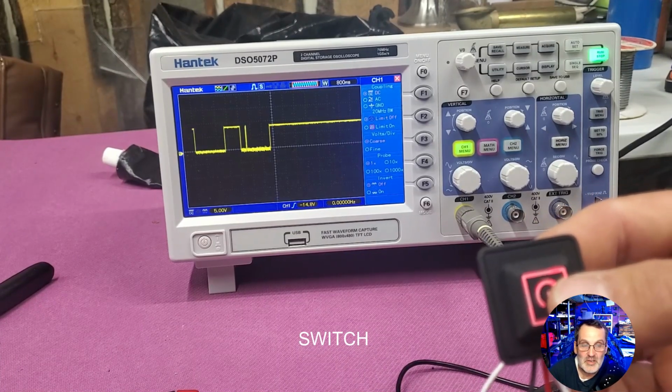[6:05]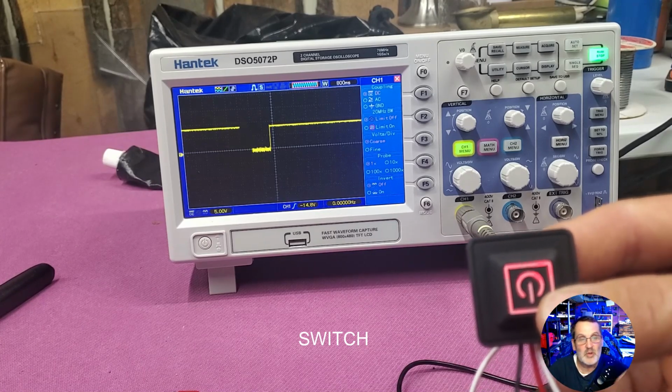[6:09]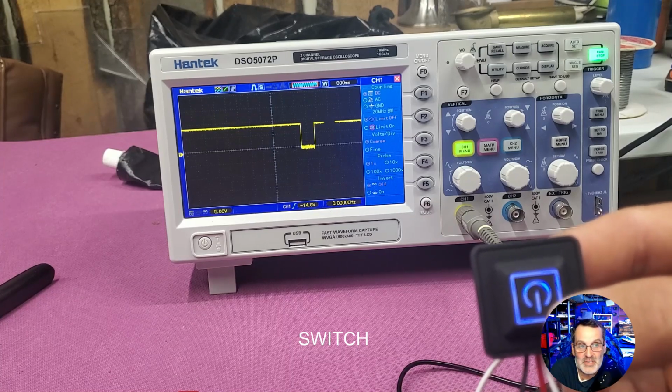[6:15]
And then my meter, I realized that there was some kind of duty cycle on the button, so I decided to get my oscilloscope and give it a shot. Now, here it is, 100% duty cycle on the red. As you can see, we've got the 9 volts happening all the time, just beautiful. Then you push it again and you get 75% duty cycle. So it stays on for 75% of the time and off for 25. And then the next phase is 25% duty cycle.
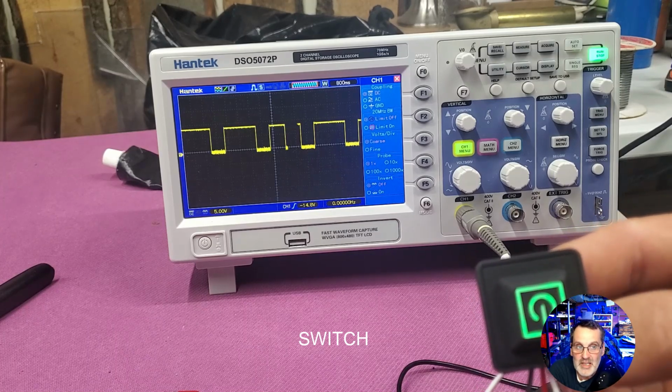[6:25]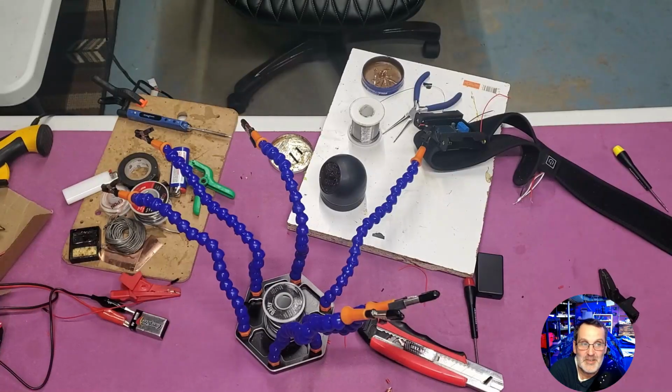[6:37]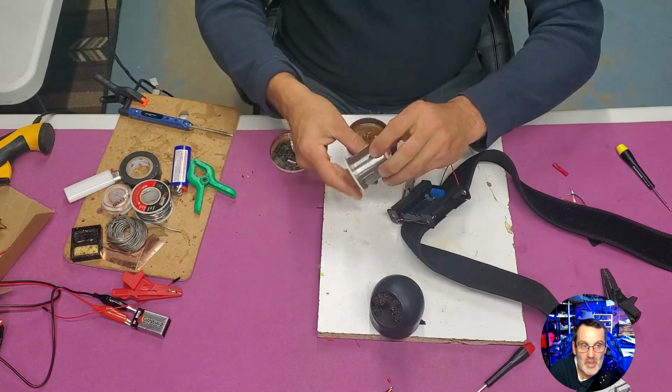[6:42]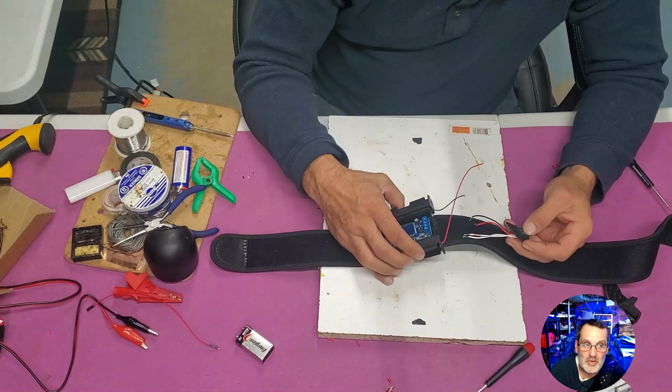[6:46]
What do you think is going to happen now to the PWM when we're at 1% duty cycle, 1 hertz, for example, and then we're running the button on 75% duty cycle? I'll show you that at the end of the video. The rest of the stuff is pretty straightforward, right?
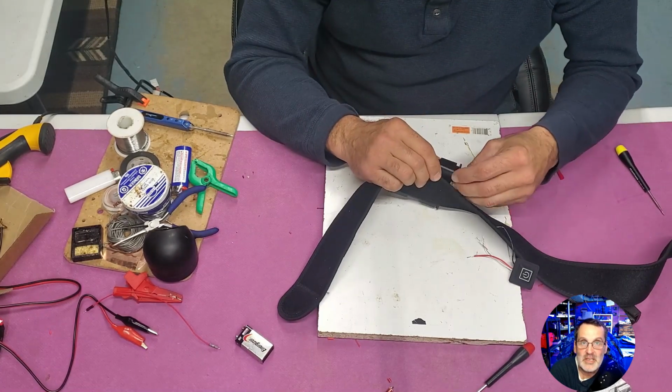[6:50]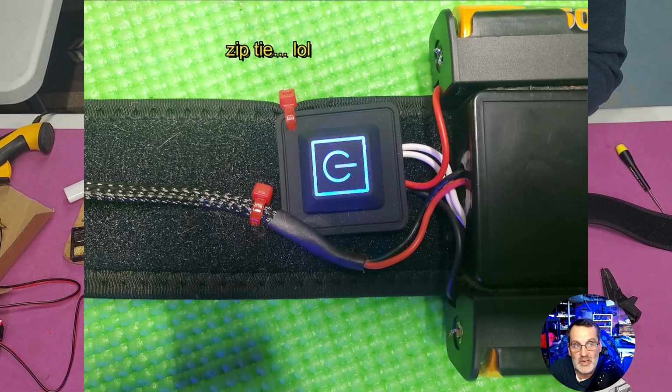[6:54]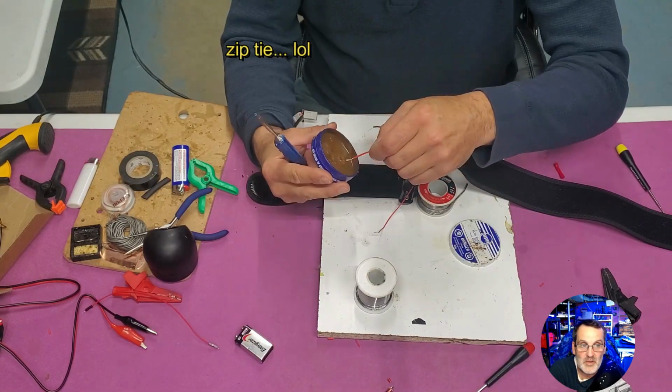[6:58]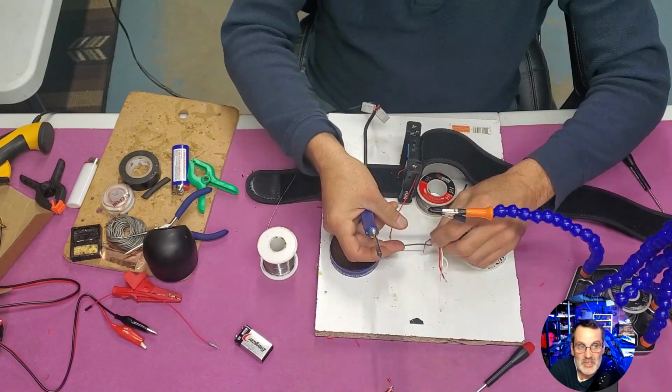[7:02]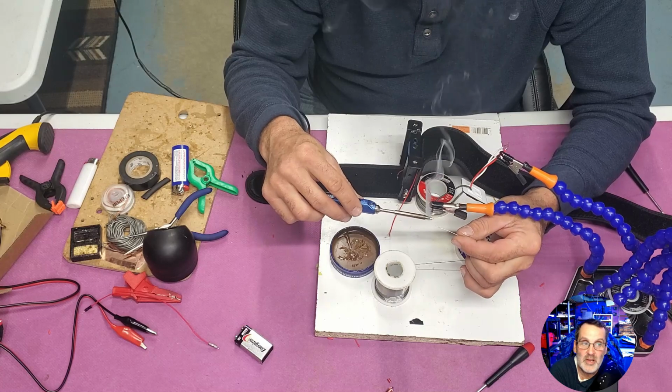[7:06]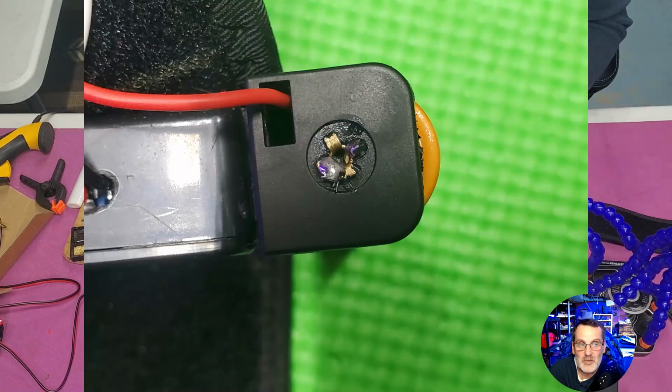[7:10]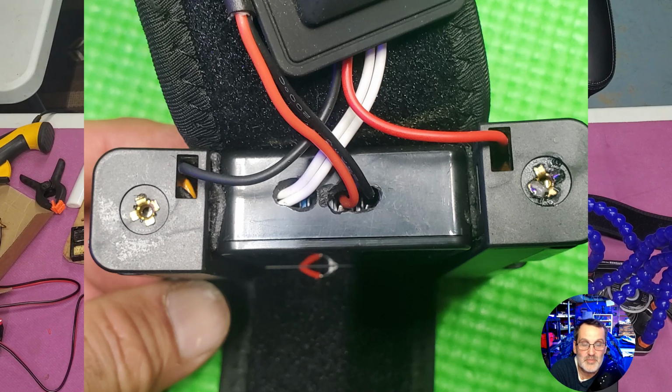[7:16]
Once again, I mounted the button using shoe glue, and I put one screw and one washer in there to keep it in place while it dried up. Shoe glue is amazing that way. I like to use flux on my wire whenever I get a chance, especially if they're the cheap Chinese wire that are aluminum wire. Solder doesn't like to stick to that too much. I tried to solder my switch directly to my battery holder, but I was melting the plastic, so that was not an option.
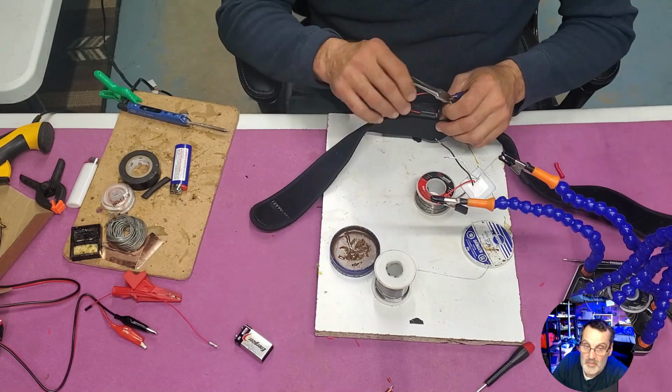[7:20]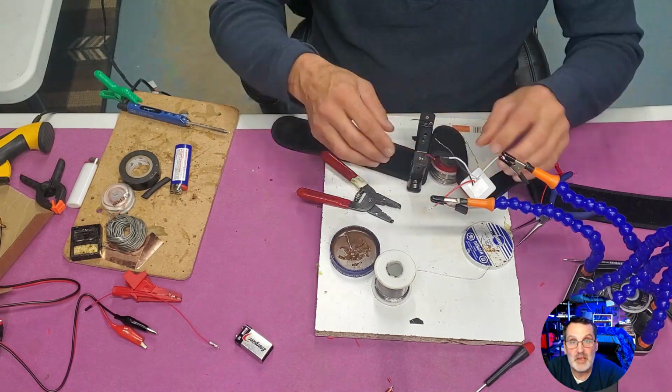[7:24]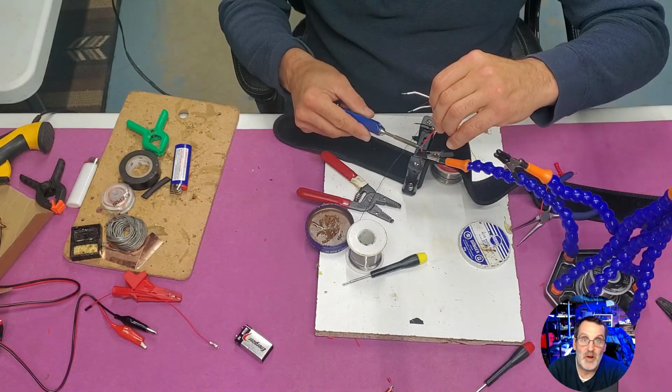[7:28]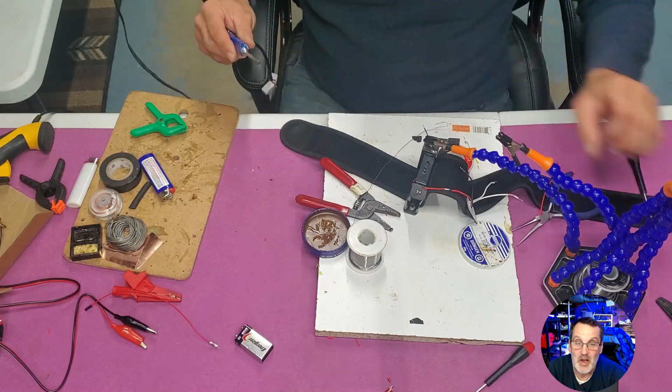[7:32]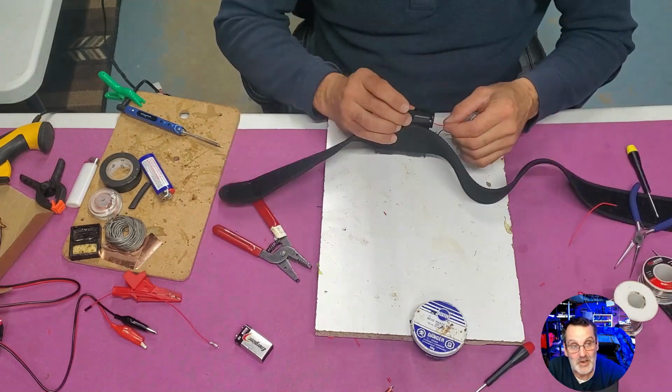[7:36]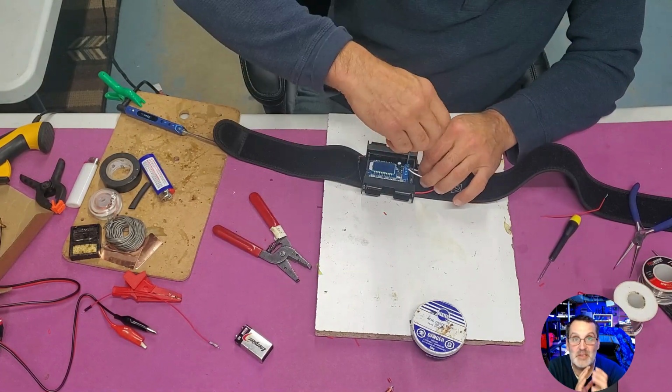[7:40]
The rest of the build, guys, is pretty straightforward after that. I make those videos to encourage people to modify and test and do stuff and give you some ideas. We're having a blast at the Patreon. We're inventing all kinds of stuff together. But yeah, take this, and I'm telling you, it works.
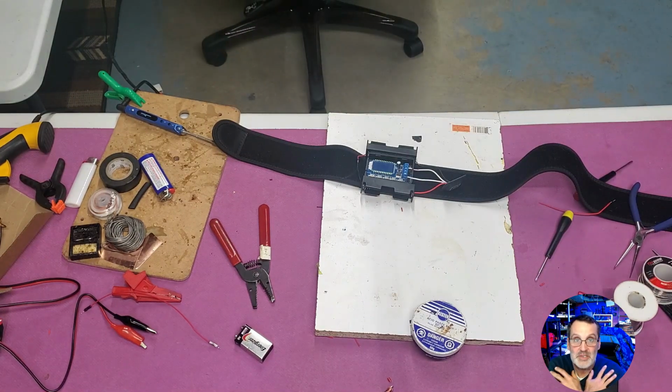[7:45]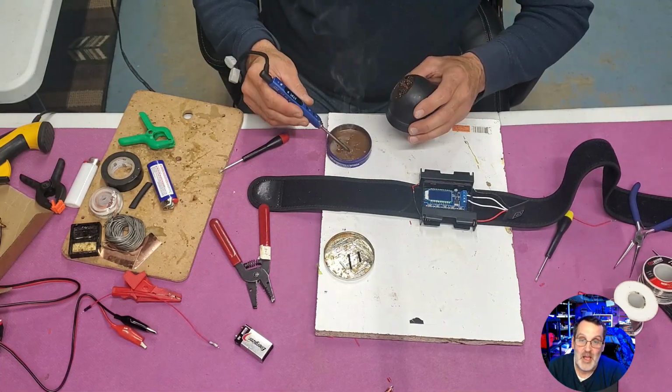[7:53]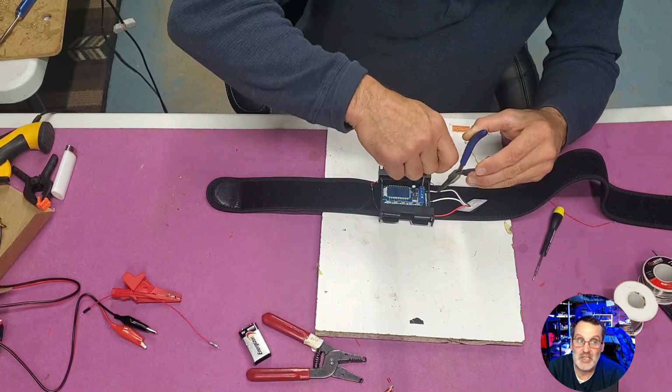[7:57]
I've had major changes in my shoulder. I was peaking out. I was not getting better by any stretch of imagination. And then after 2 days of using it, I've seen a huge change in my shoulder. I can't say enough good things about it.
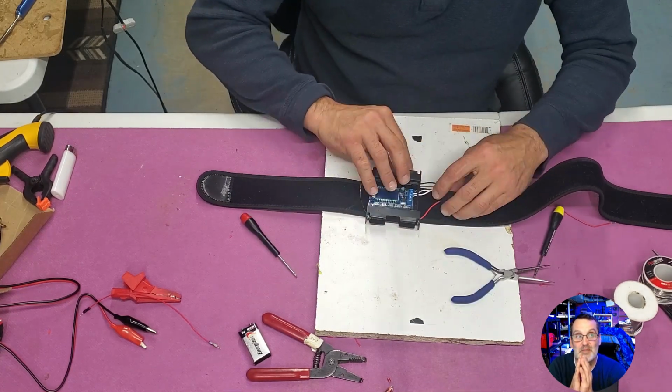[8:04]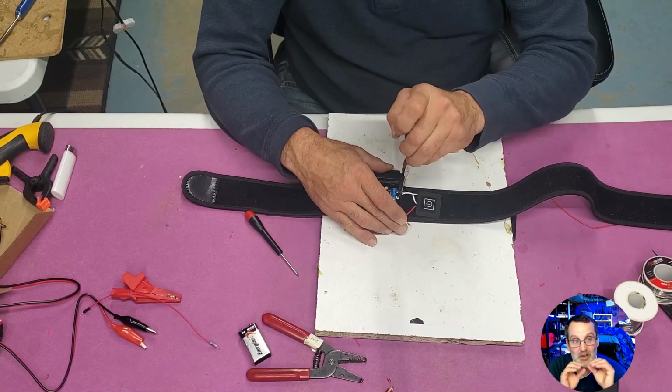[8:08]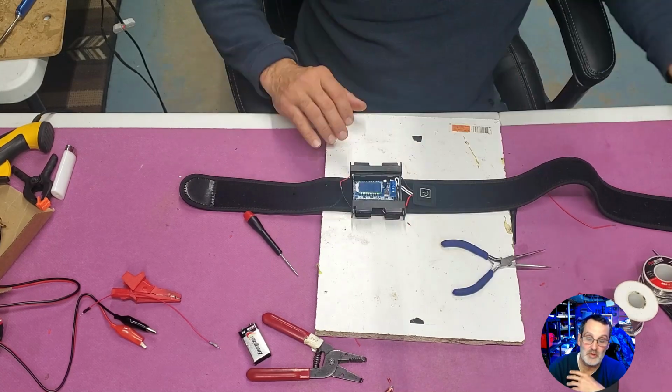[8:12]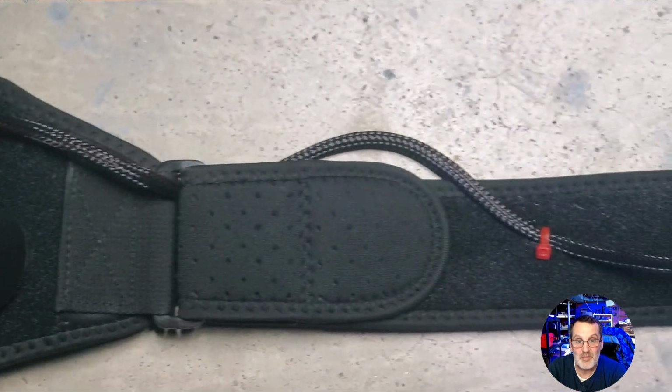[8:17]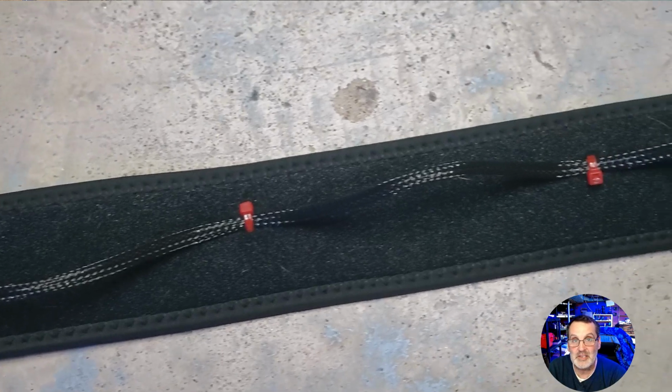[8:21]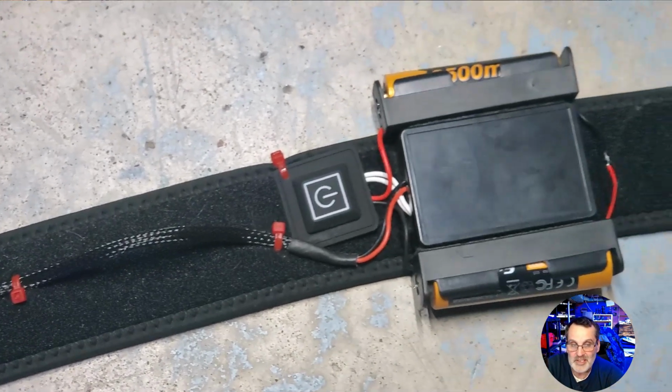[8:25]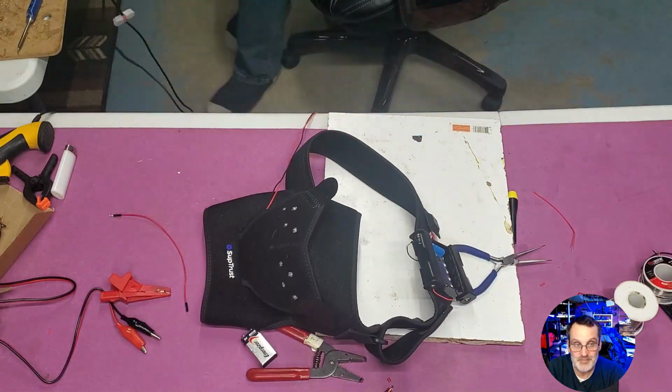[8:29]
But enough of that. The button, I used shoe glue to put it on, like I said. And then I ran the length of the wire back to the coil from the controller, because you've got to go all the way around. And then I used a mesh, like a cover, to make it look good and actually protect the wires a little bit too. It's not like this thing's got it rough by any stretch of imagination, but it just makes it look a little bit better, a little more finished.
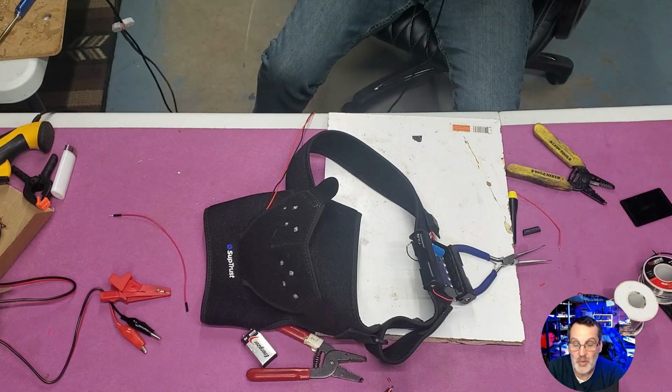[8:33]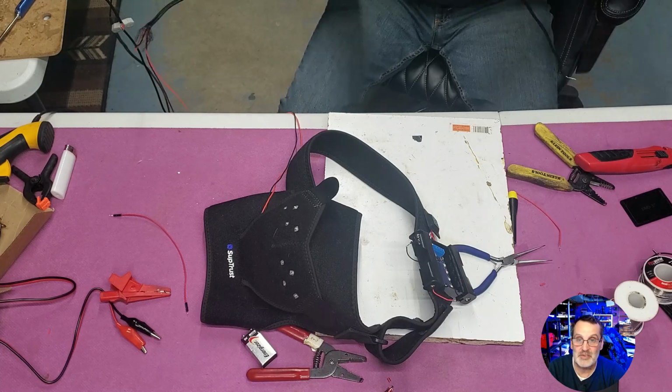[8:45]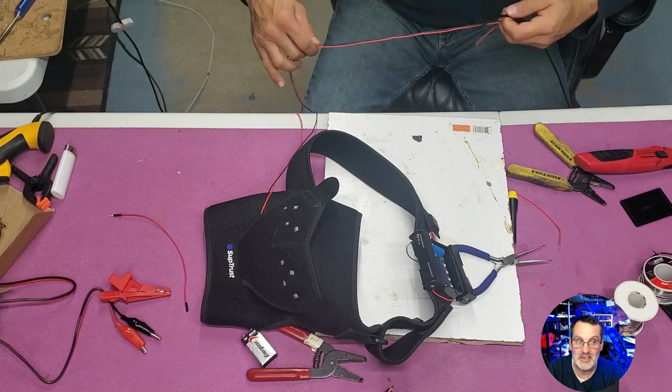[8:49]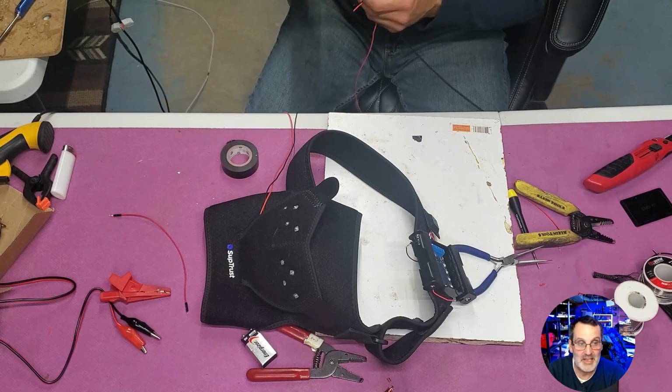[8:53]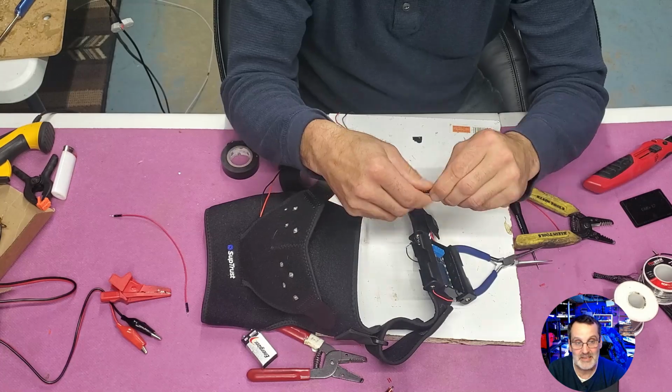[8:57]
It's a good prototype. I've already got a few people asking me about it. I'm not opposed to building them for some people. If you're interested in something like this, let me know. I think if you have a shoulder injury, you know how bad it is and how long it takes to heal. And if this can help you and make it heal faster, it is worth the trouble to build them. Give it a shot.
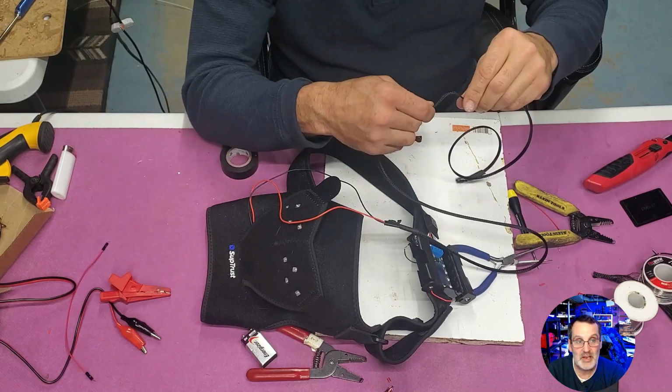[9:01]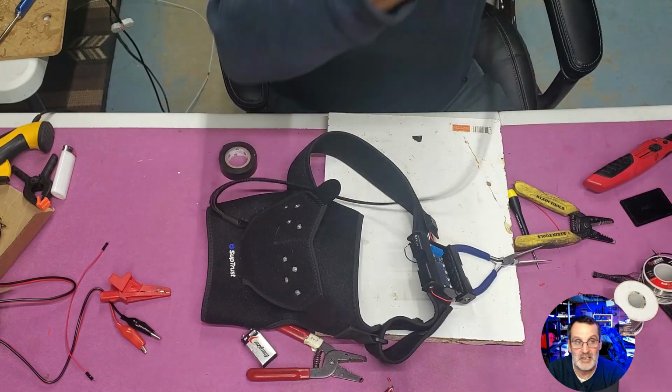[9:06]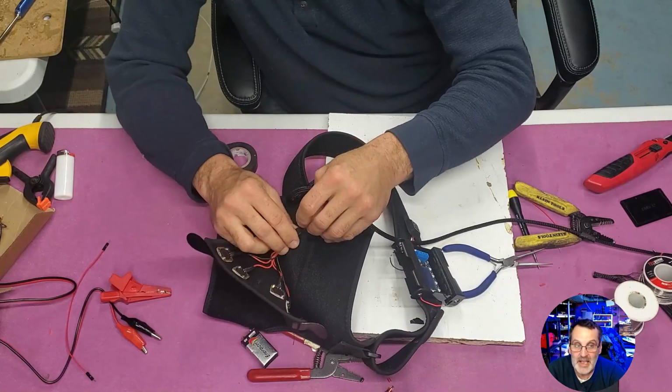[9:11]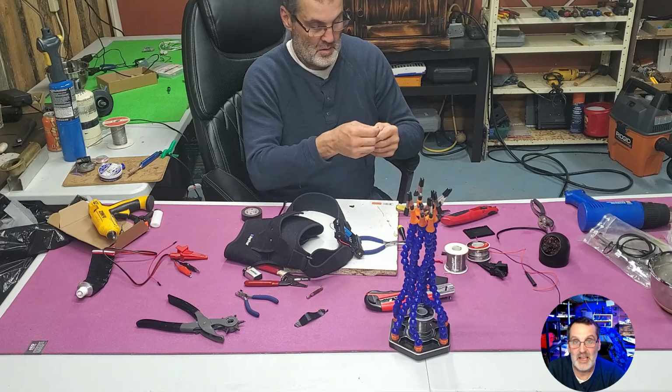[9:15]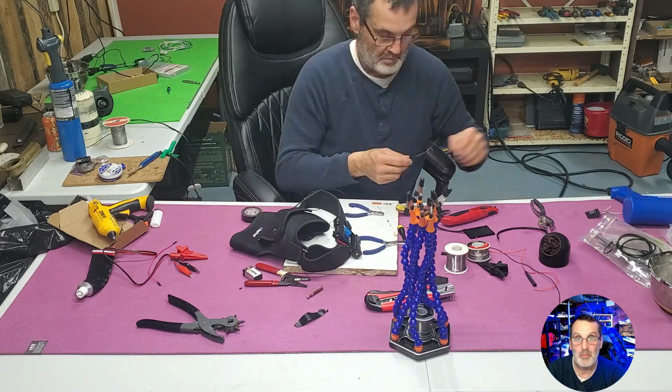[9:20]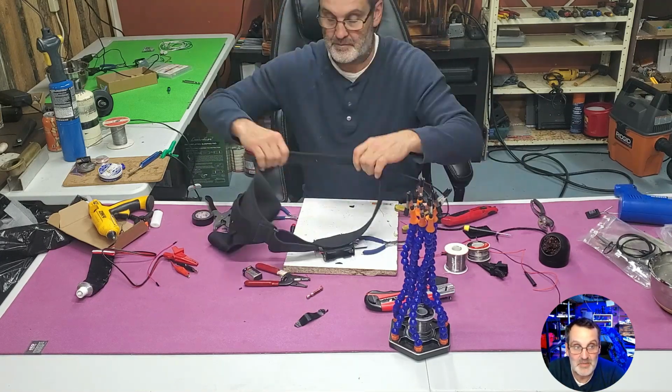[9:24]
At the end of the day, I love it. And I'm going to keep that one for myself for sure, because I have a constant injury on my shoulder. It just never goes away. I mean, I popped them out of their joint I don't know how many times now. And if you got that problem, you know exactly what I'm getting at.
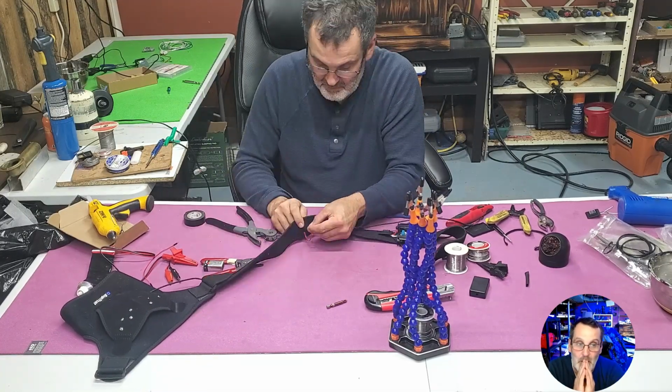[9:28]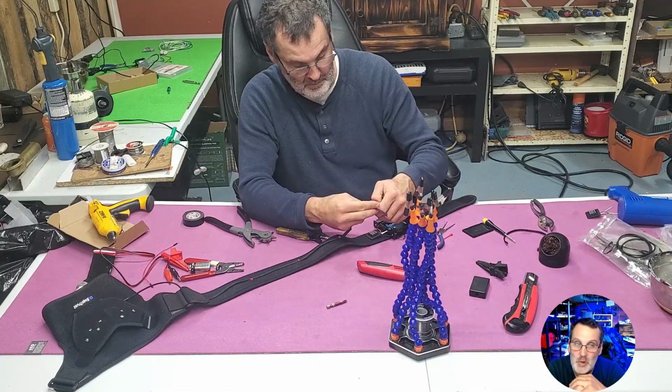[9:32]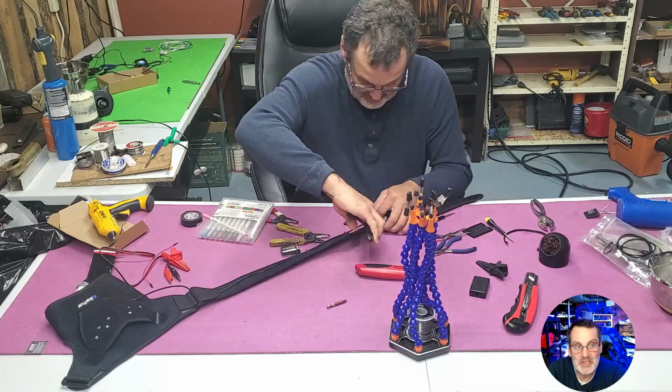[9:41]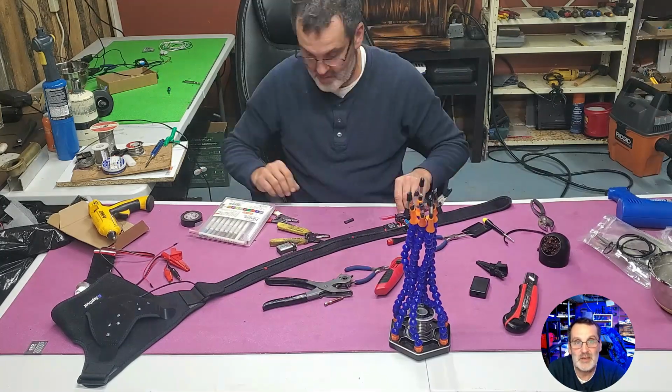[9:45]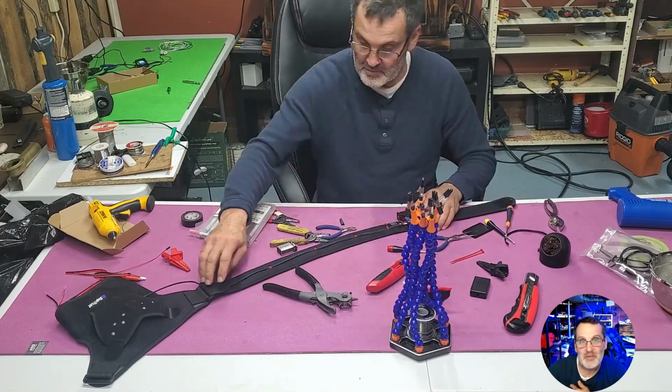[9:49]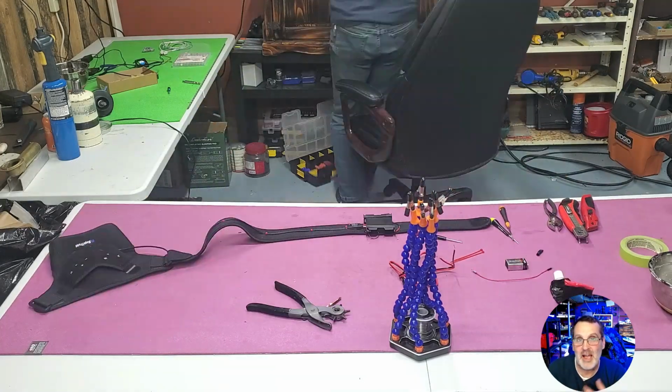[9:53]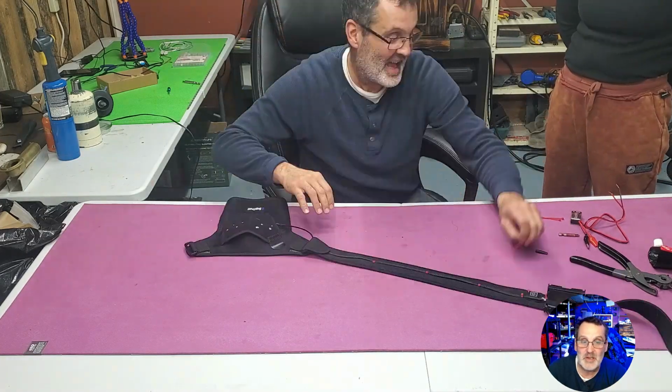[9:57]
So now let's talk about the magic button. What do you think is going to happen when I put it on 25% duty cycle, 75% duty cycle, when the PWM is already at micropulsing? And I'm going to talk about that too in more detail in a second here.
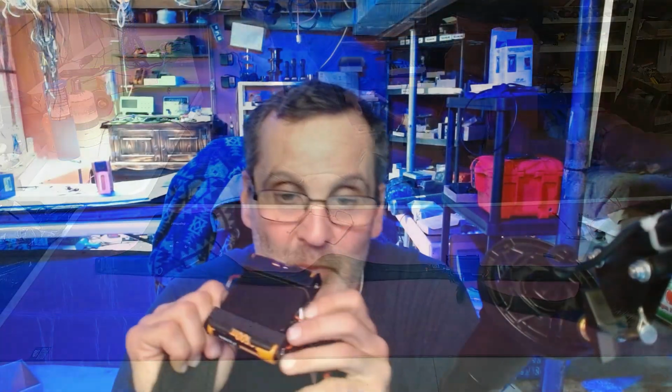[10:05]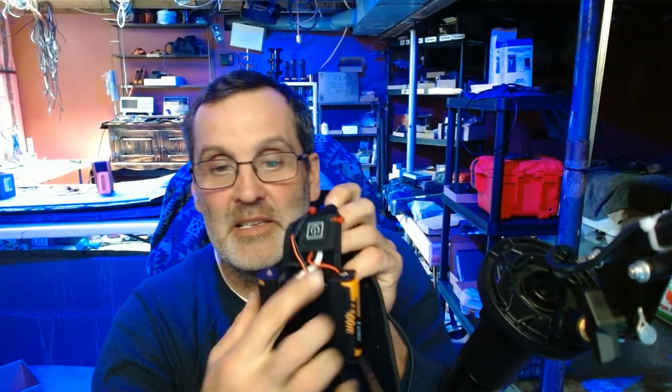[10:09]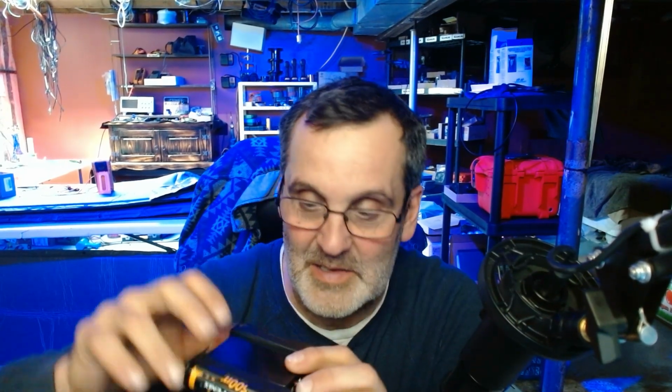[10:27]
The moment you've all been waiting for. So, as you can see, I still have some work to do to finish this off over here properly, with the wire sticking out like that. I'm not too sure I'm going to do that yet. If you have some ideas, just put it in the comments. Don't be shy. There's no crazy ideas. Ideas are ideas. Bad ideas lead to good ideas. A crazy idea leads to a sane idea.
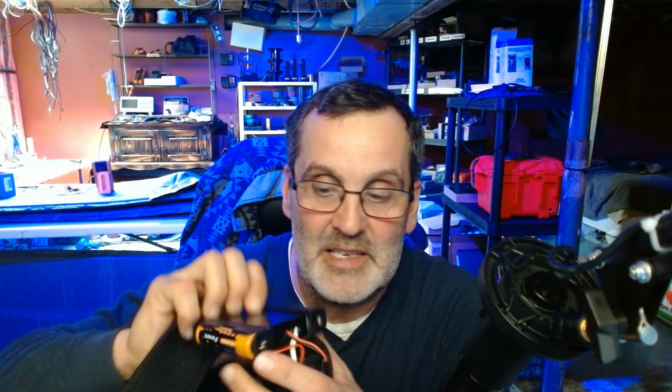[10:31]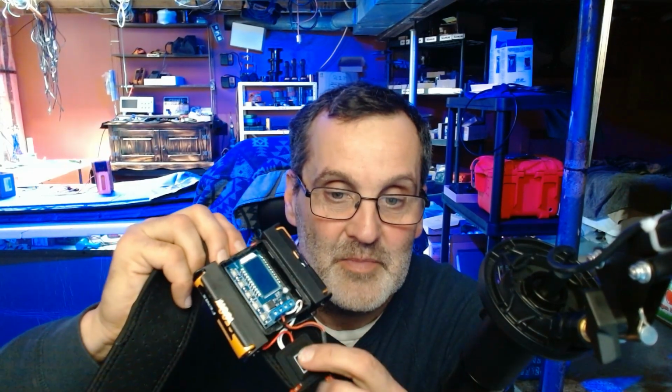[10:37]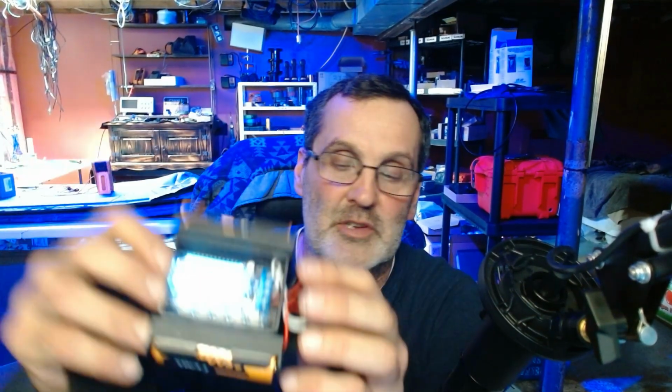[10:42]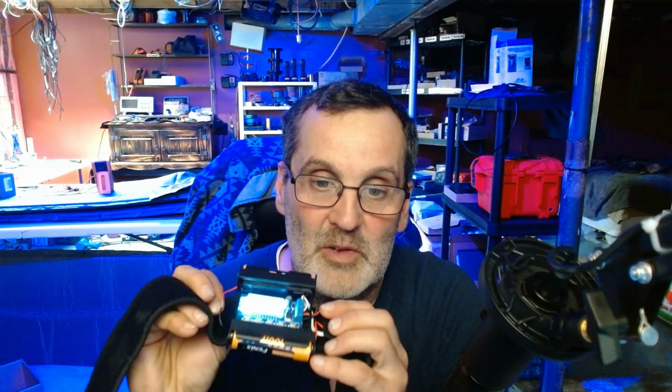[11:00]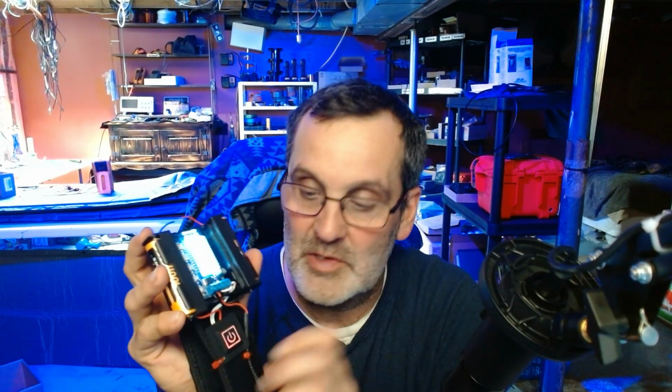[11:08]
It's usually where I get my ideas. Okay, so the question is, I have my ZKPP2 inside. Turned it on, and it's too bright for the screen, unfortunately, so you're going to have to take my word for it. So right now, I'm at 5% duty cycle, so I'm micro-pulsing this at 5% duty cycle and 14 hertz. There's no reason why 14 hertz, it's just in my head, I love 14 hertz. I feel that it's the magical one, and it works really well. Okay, as you can see, the screen is on, and it's basically doing a 5% duty cycle.
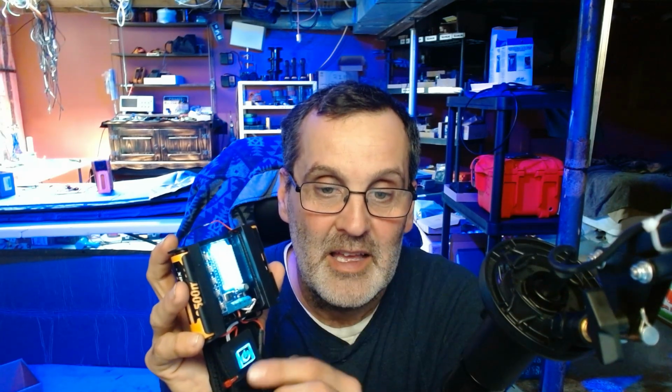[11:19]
If I hit it, it's on for 75% of the time and then off, on and then off, on. Now if I hit it again and put it on the 25% duty cycle, it's on for 25% of the time. When it's on, the PWM is doing its magic, and then when it's off, it's off.
So what's the purpose of this? Makes your battery last forever, and you're getting the full benefit of it, especially if you're wearing this thing like I do, pretty much all day long. From the time I wake up in the morning to the time I go to bed at night, I just got it on, and I usually leave it either on the blue setting or the green setting. Now, I was worried that it would burn out the PWM, but it didn't, because it's been working like this for quite a while. I know I mentioned this many times in my videos, but the ZKPP2 and the ZKPP2K, which is the same thing, one without the case, one with the case, they're amazing, amazing.
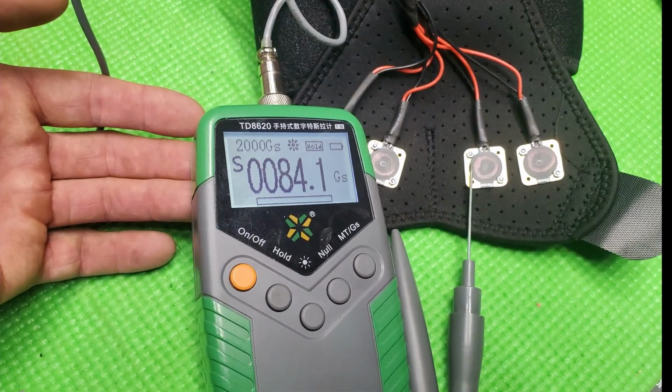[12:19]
So 6.4 volts, and there it is. You're probably wondering how many gauss it makes now, so let's have a look. So you're not gonna believe it. I went up there and put my gauss meter, and I put the duty cycle up to 50% so I could have my gauss meter capturing how many gauss, and I was going to put that on video. And it died. Thank God I had my gauss meter on hold, and it kept the last reading that it did. So I was able to take a picture of it to show it to you guys.
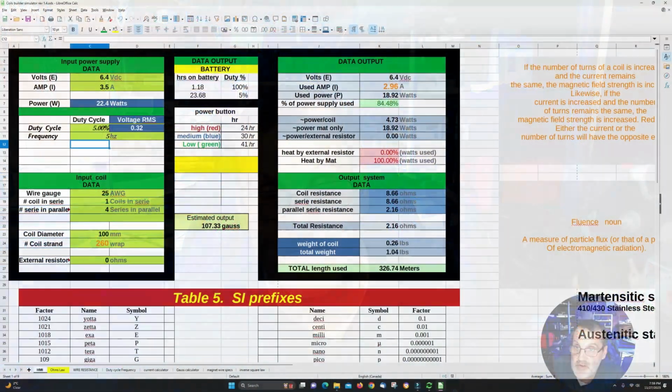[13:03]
And as we speak right now, my batteries are on charge. Which brought in the question, hey, it's straight math, why can't I just add that to my calculator so I could guess how long the batteries will last on different settings? This made some changes to the mighty calculator, and I think you guys are gonna like this, because if we start doing a lot of stuff with batteries, it's gonna be fun to see what we can project.
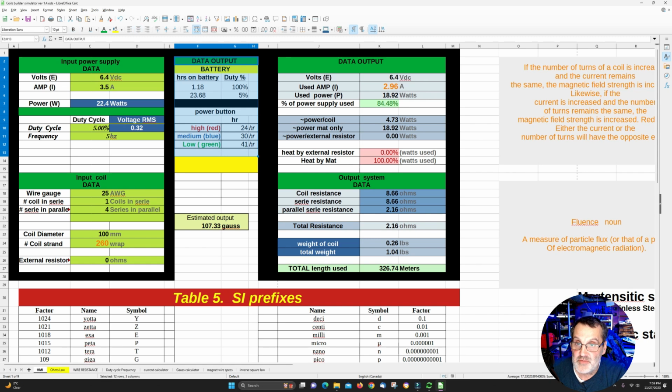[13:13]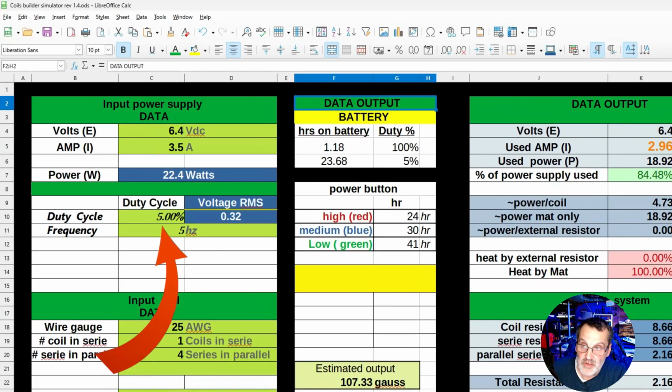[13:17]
So I added this function right here. You have nothing to do at all. You just need to enter the duty cycle you intend to run your PWM at, and it will tell you, based on the information you enter up here and everywhere else, what you're looking at. And I did the test, and well, it has to be pretty accurate, because it's math, right? So as long as you don't enter garbage in, you don't get garbage out.
So in my case, I was running 5% duty cycle. I ran it most of the time in the red, but then the last day or so, I've been doing the blue. Mostly today, all day, I've been doing the blue. So I'm looking at 3 days, about 8-9 hours a day. Let's just go 8 hours a day, right? So that'd be 24 hours of total use.
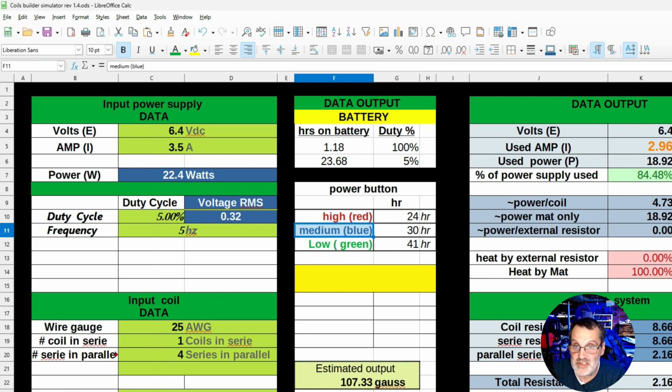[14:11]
My battery just died, by the way. Put them on the charger and they're totally empty. Even if we went 9 hours a day, that's 27 hours. So yeah, I'm between 24 and 27 hours of use on this. So I would say this is a very good, remember, this guy is like a simulator, right?
So as you can see right here, I'm gonna upload that onto the Patreon to replace the old calculator. We'll just get rid of the old one. We'll just use this new one right here. So when you use the power button on high, medium, and low, which is the 100% duty cycle of that one, 75 and 25, it gives you the total hours you'll be able to use it at, right?
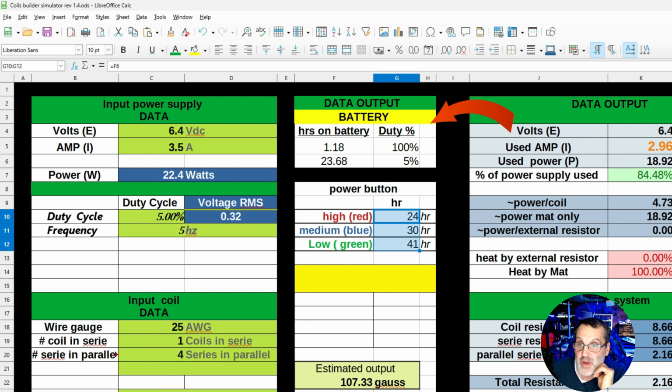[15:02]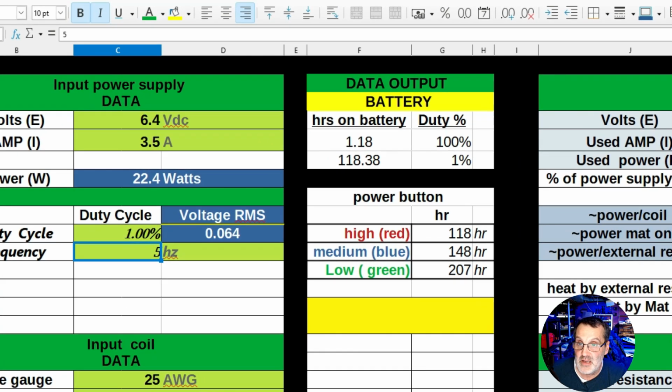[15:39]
Same thing here. If the battery was on 100% of the time, with 100% duty cycle, I mean, you would have 1 hour of power on those coils. At 5% duty cycle, you get 23.6, so 24 hours, right? So as we change this here, everything lowers down, right? And it has to be linear, guys. This is a straightforward thing. So if you're running 25% duty cycle, you're looking at 5, 6, and 8 hours. At 1% duty cycle, this is how long you'd be looking at, right? If you go in green, you'd be looking at 207 hours.
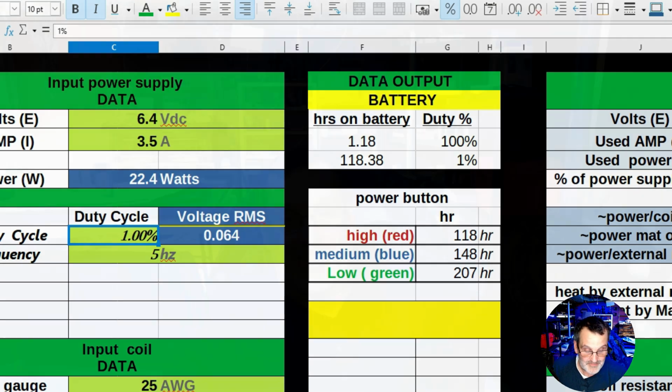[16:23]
I'm going to make a video soon about micro pulsing at 1% hertz and how the coil still gives you the full gauss, right? And this is the 100 millisecond that we're talking about. It's the sweet spot. So you could micro pulse at 1%. I'm going to prove that. It's really difficult because my meter is not quick enough, but if I can get my oscilloscope probe to work, we'll be able to see it on the oscilloscope for sure. Anyway, stay tuned for that.
So guys, I hope you're as excited as me. I mean, the stuff we're doing on this channel is incredible, and the Patreon is just buzzing with activity. I'm having some of the most wicked conversations with people. I know I'm excited. I have a ton of other stuff in the works. I just ordered new metal. At the time the video is being posted, I probably have that new metal with me. And I want to thank one of my Patreons for that. I've been looking for the genuine article for quite a while, and he found it and let us know, and I jumped on the bandwagon and got some.
You don't know what new metal is? Well, it's gonna change your life. This is like the answer to so much stuff I have. I'm excited. I'm super pumped. A ton of people have been building my design, my prototype. They've added to it. I'm having Zoom chats with a bunch of people. Some of them I'm chasing. We just can't get along, our timing just, there's all kinds of weird time zones and stuff like that. But what a blast, what a journey.
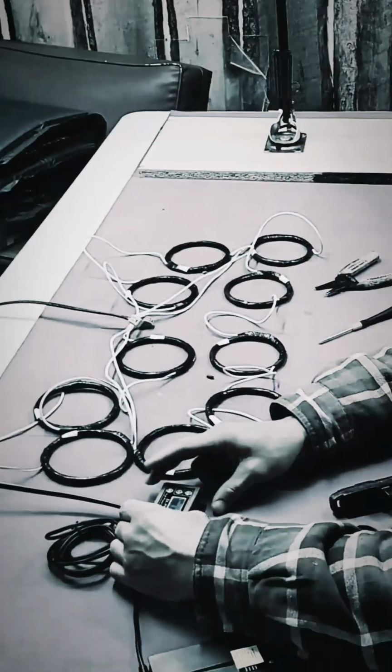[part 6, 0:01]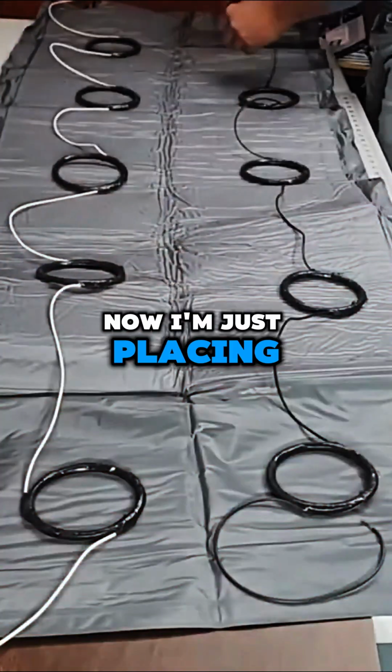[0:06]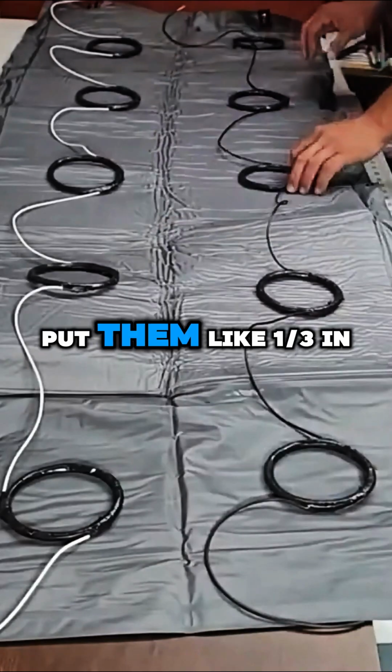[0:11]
Now I'm just placing the coils on the mat. I've seen a lot of people putting their coils right on the edge. Don't do that. Put them like one third in.
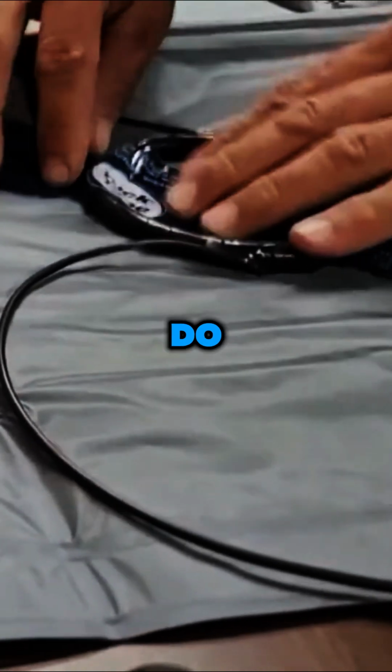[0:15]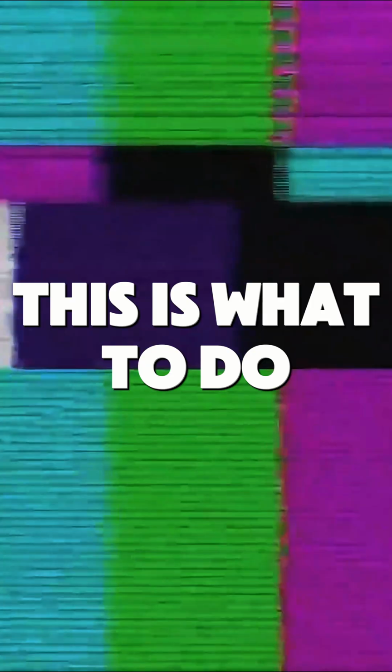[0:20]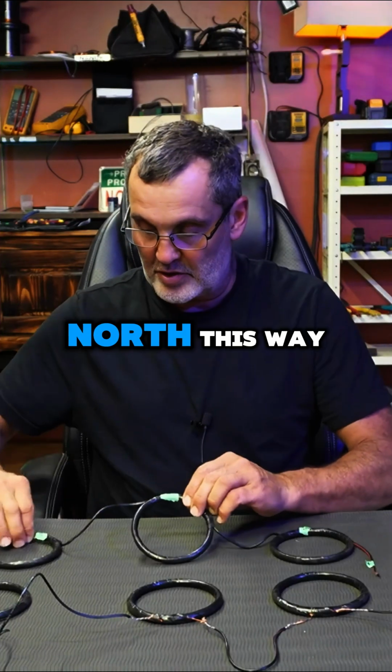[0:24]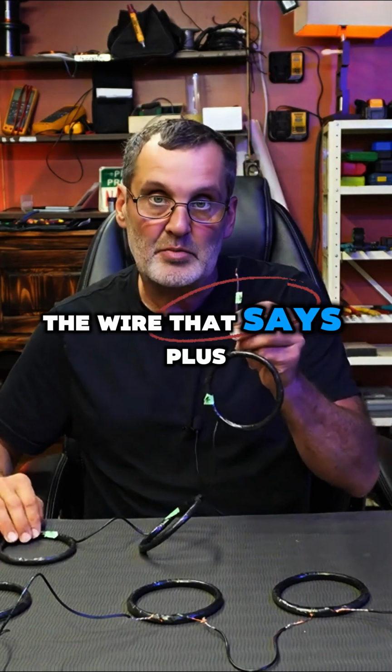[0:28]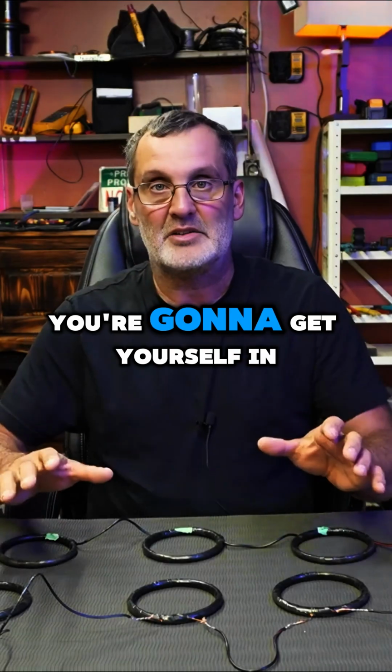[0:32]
And one thing that you guys should do that I didn't do, you should check the polarity of the coil before you tape them in. So if you look here, I marked them to be north this way. You also have to mark the wire that says plus on it, because if you don't do that, you're gonna get yourself in trouble. How? Let me show you.
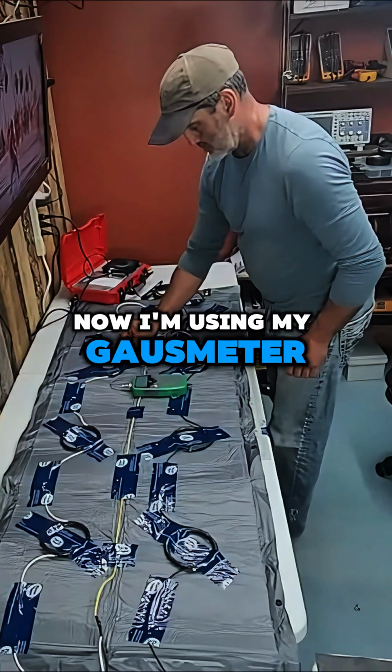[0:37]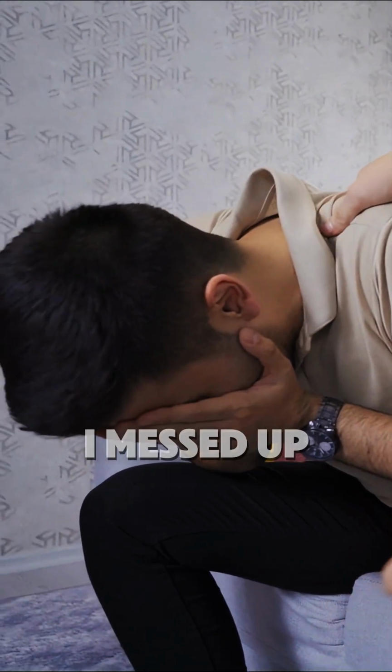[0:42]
Okay, now I'm using my gauss meter and I'm checking the polarity of my coil. And I'm realizing right now that I messed up.
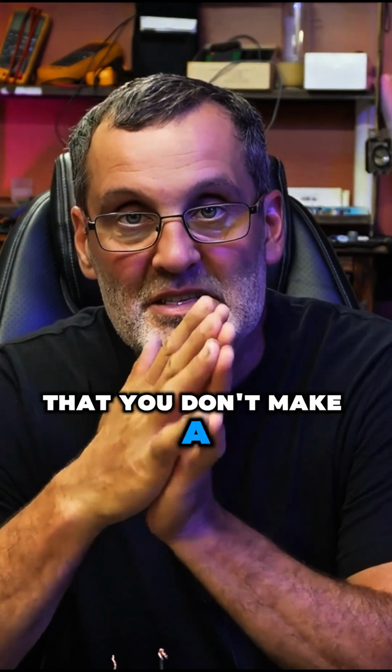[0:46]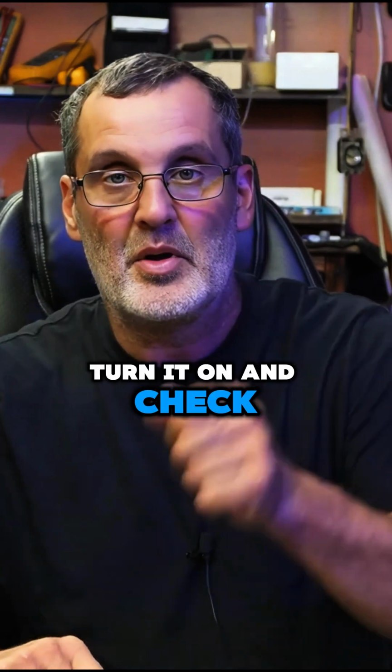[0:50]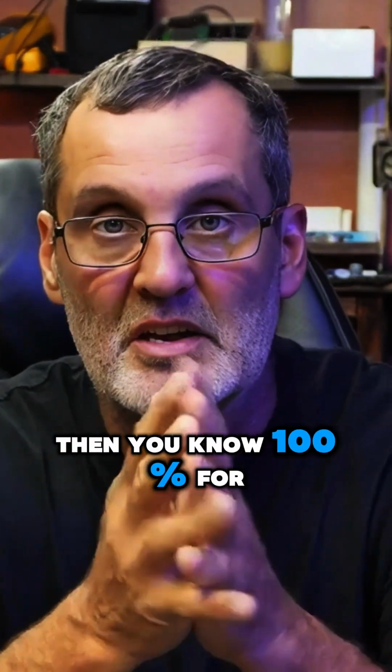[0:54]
Another way to make sure that you don't make a mistake, put them inside your mat, turn it on, and then check the polarity of every coil and then tape them down. Then you know 100% for sure you're good to go.